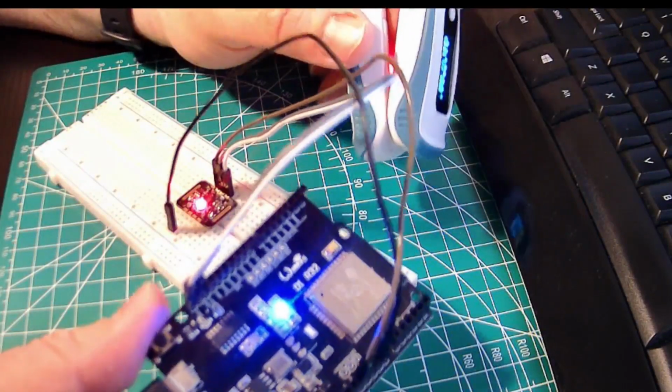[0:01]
Hello once again, friends. Last video, I showed you how to use the MAX30102 pulse oximeter module and breakout board along with an ESP32 microcontroller to measure blood oxygen saturation. What I didn't do was include a heart rate measurement. The reason for that is I couldn't find any code examples that actually worked. So I figured we should just look at the problem and do some of our own engineering.
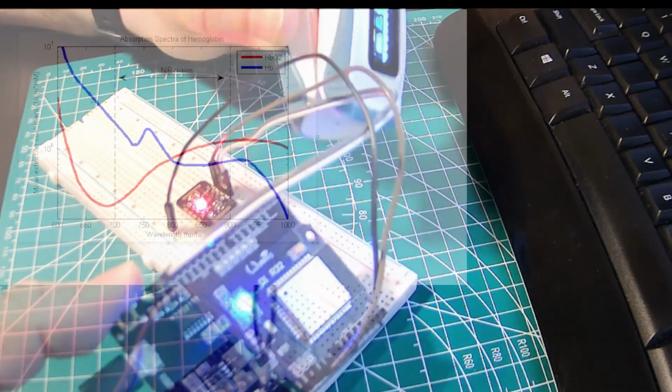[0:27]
First, you'll recall that a pulse oximeter exploits the fact that blood transmits or absorbs red and infrared light frequencies to varying degrees depending on how oxygenated the blood is. So we can shine red and infrared light at or through the surface of the skin and then measure how much of the light is transmitted or reflected using a light sensor, like a photodiode. But we can also exploit another observation of the reflected light to measure heart rate.
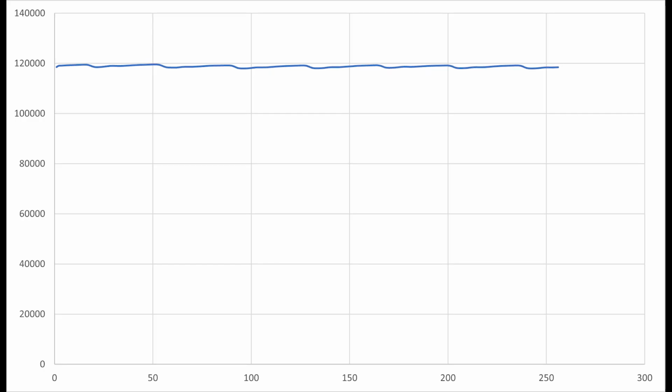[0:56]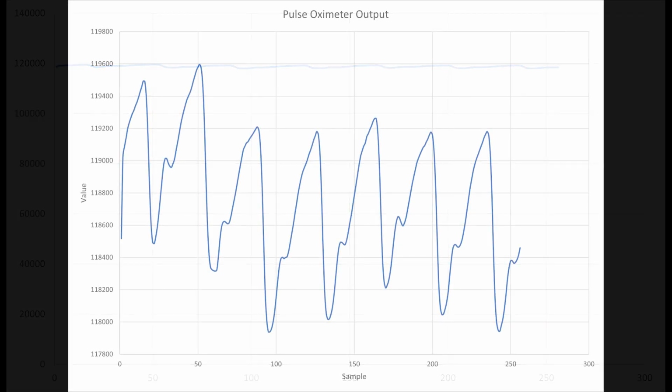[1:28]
This graph illustrates the samples taken for refracted red light from our setup using the MAX30102 breakout board. I recorded 256 samples while pressing my finger against the sensor. First, note that there is a rather large offset or DC signal that is sort of obfuscating what we really want to see. Let's look at it with the vertical axis not starting at zero and adjust the scale, and you'll see an obvious pulsation in the waveform.
This is my heartbeat, and the frequency of those pulses corresponds to my heart rate at the time of the measurement. So how do we use these samples to automatically measure heart rate? You might think of writing some code that scans the values and searches for waveform peaks and troughs and measures the time between all of them to compute an average heart rate. That's certainly possible, but probably a little trickier than you'd think.
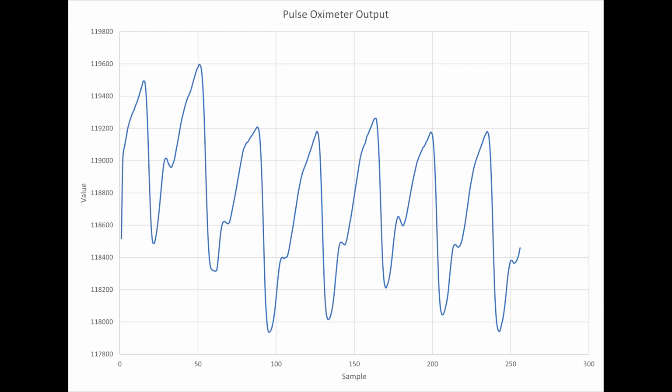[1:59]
Look at those small pulses that are sort of part of the larger pulses. They form local maxima and minima that might be difficult to distinguish from the main ones. And certainly you can't rely on using threshold values to determine pulse peaks and minimums, as you can see how the levels vary quite a bit, even in this small window sample.
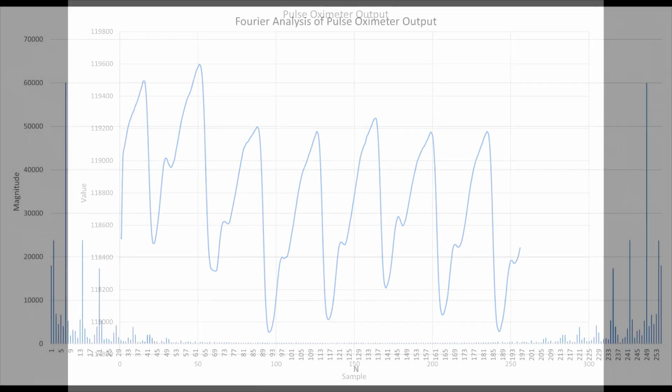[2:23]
If you've ever studied signals and systems, you might recognize this as something perfectly suited to Fourier analysis. In a nutshell, we can transform a time domain signal into the frequency domain. If we apply a Fourier transform to this waveform, we get a result that shows us the spectral content of the signal.
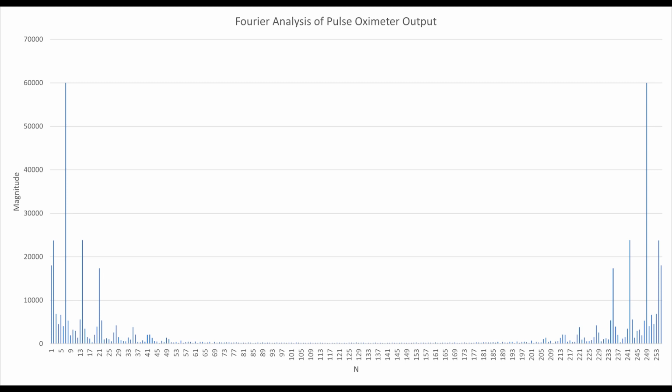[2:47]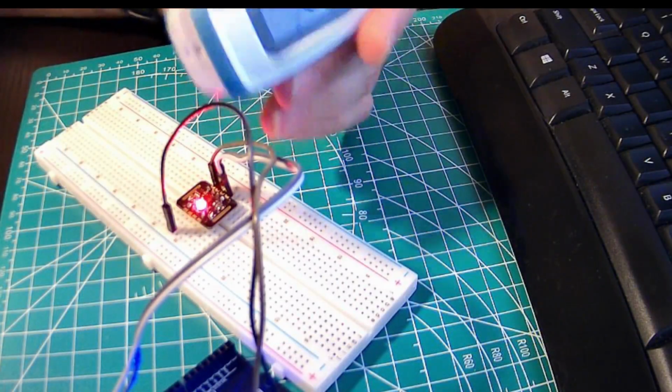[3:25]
Now, in this plot, I've removed the DC or zero frequency component because it's not relevant to a heart rate for a living person. I already determined that the sampling rate of the sensor we're using is 50 samples per second. For a 256-point discrete Fourier analysis, it means each bin corresponds to a multiple of about 0.2 hertz or 0.2 beats per second. We find the dominant frequency at an index of 7, which corresponds to a frequency of 1.37 hertz, which we multiply by 60 to get beats per minute. It turns out to be a heart rate of 82 beats per minute, and I can confirm that was in fact the correct heart rate at the time of measurement. So using Fourier analysis really seems to be a no-brainer here in my opinion.
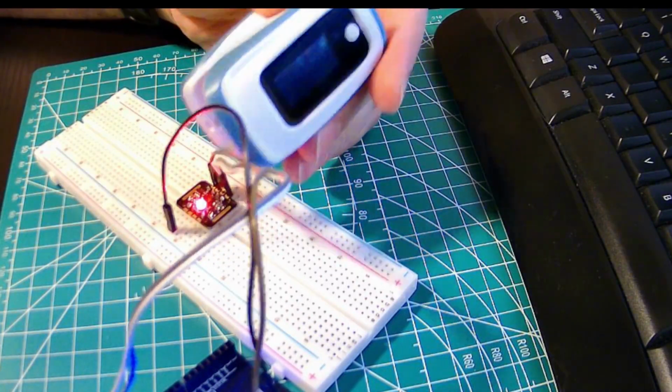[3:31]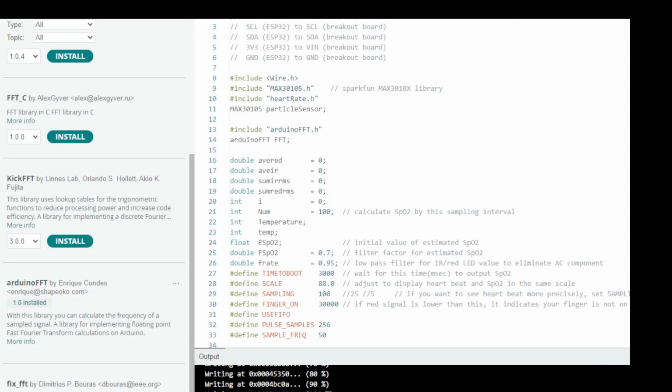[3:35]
Let's see about applying that on the ESP32. Going to the Arduino IDE, what we'll do is make sure we have installed the Arduino FFT library that I'm highlighting here. As with many Arduino libraries, the documentation isn't exactly exhaustive, but there are a number of examples available if you follow the link to the associated GitHub library, and you can find some information if you do a search. With this library, we can perform a fast Fourier transform, which is an optimized discrete Fourier transform that we must use a power of two samples.
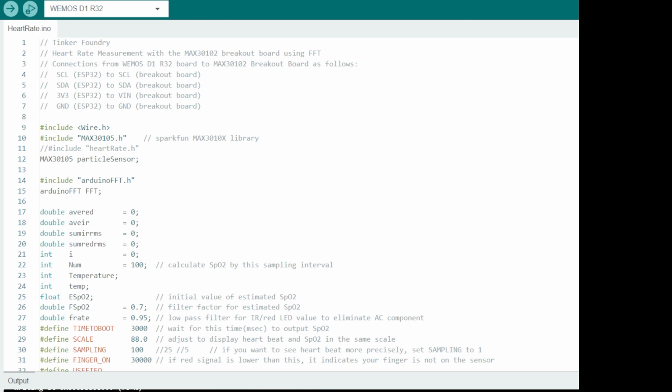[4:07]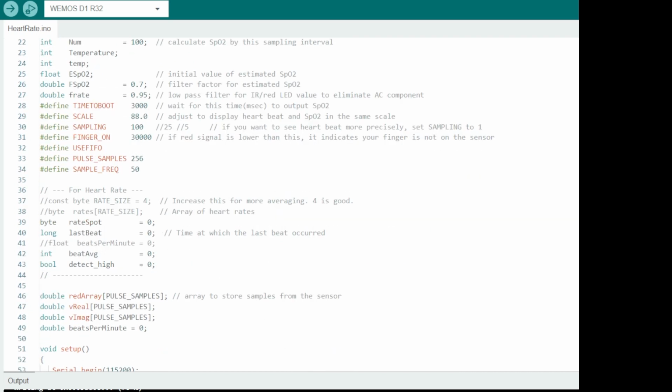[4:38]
I'll quickly run through the code just to highlight a few things before we run it. But remember, I will share the code listing used here through a link in the video description. You will also want to reference my previous video for more background about the MAX30102 pulse oximeter sensor. Okay, so we include libraries for the MAX30102 itself and for the FFT. We have an array to store the sensor samples. Here I call it red array, and it has pulse samples number of entries, which is defined as 256, of course.
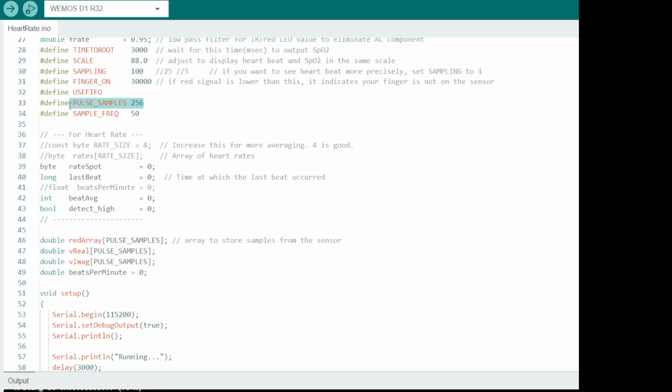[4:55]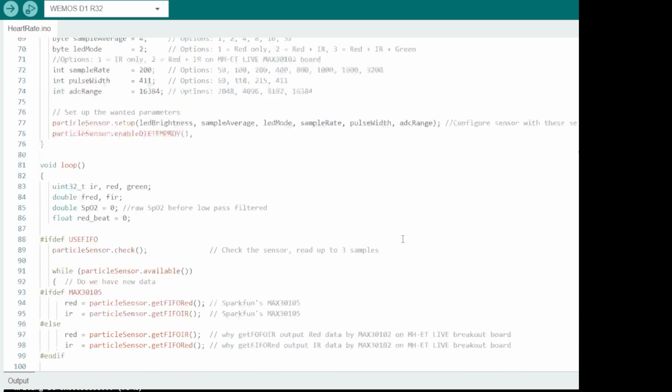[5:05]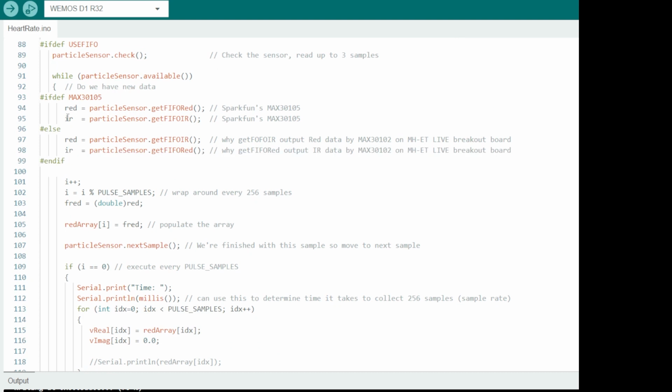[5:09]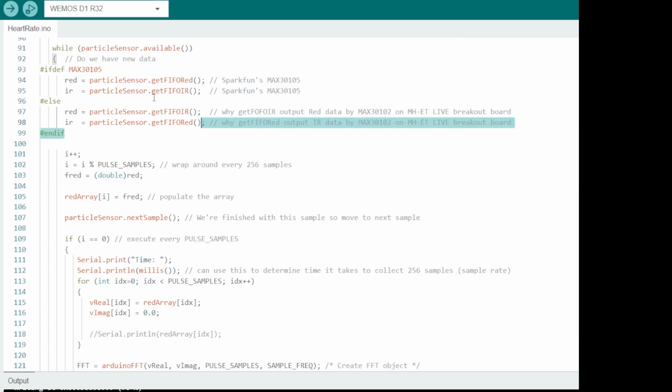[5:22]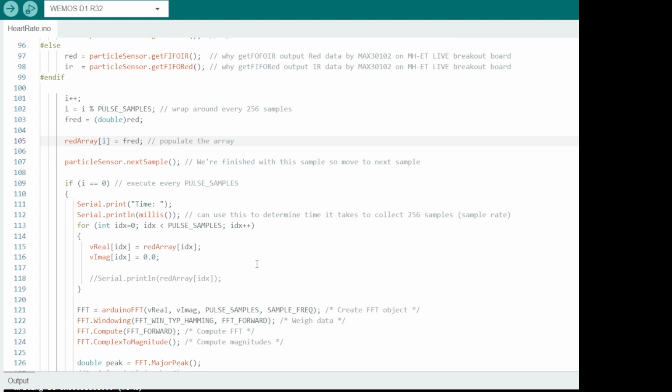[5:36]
Also note, I define our sample frequency as 50 up here. So we'll jump to the main loop where we have a while loop, which waits on the next available sensor reading from the MAX30102. Once a reading is ready, we collect the red and infrared samples. Now, we only end up using the red value anyway, but this, along with some other code, is a leftover from the oxygen saturation measurement code from the last video. So now we take the samples one by one and populate the 256 entry array.
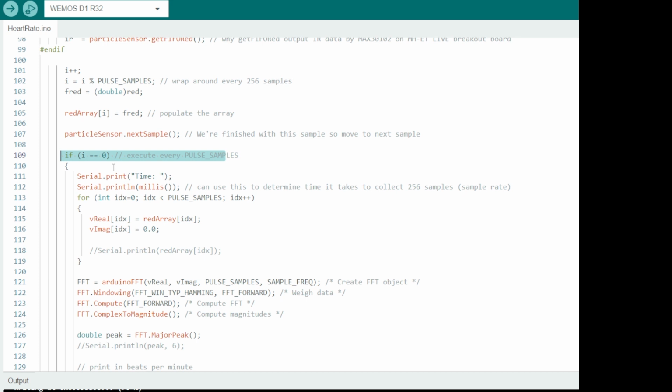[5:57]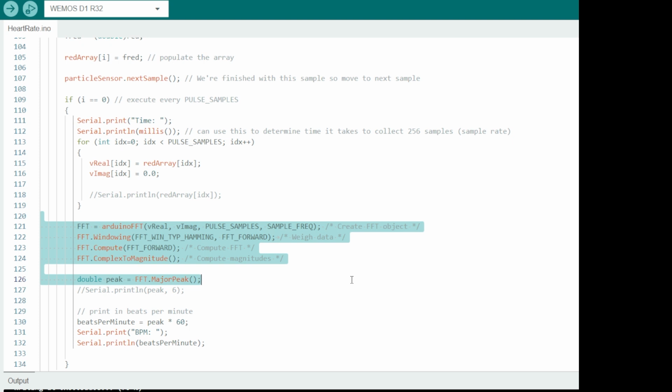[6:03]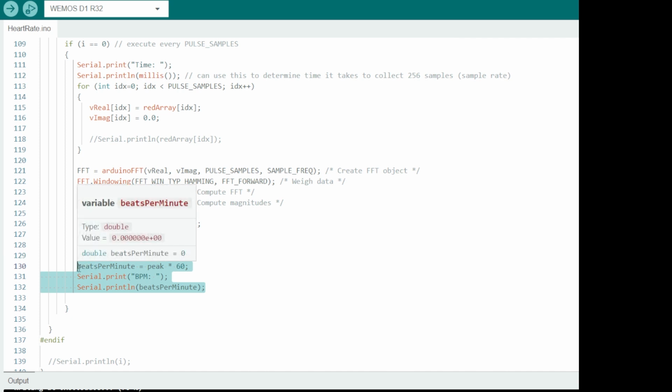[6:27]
Once we've collected a multiple of 256 samples, we have an if statement in which we pass along the samples to the FFT function. The code snippet is adapted from a code example. And in the end, we use the library function to find the major peak of the transformed samples. That is, we find the dominant frequency. And finally, we convert the frequency to a beats per minute value and print the result to serial output.
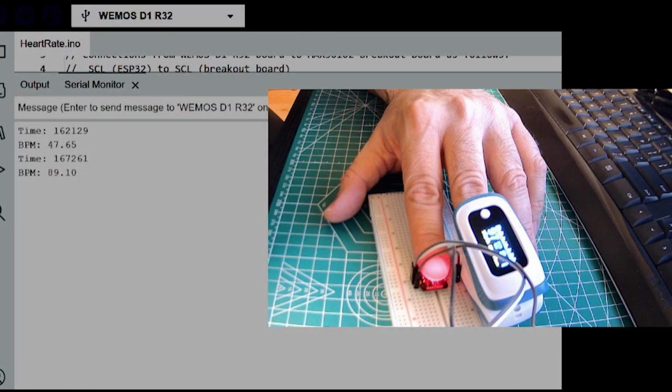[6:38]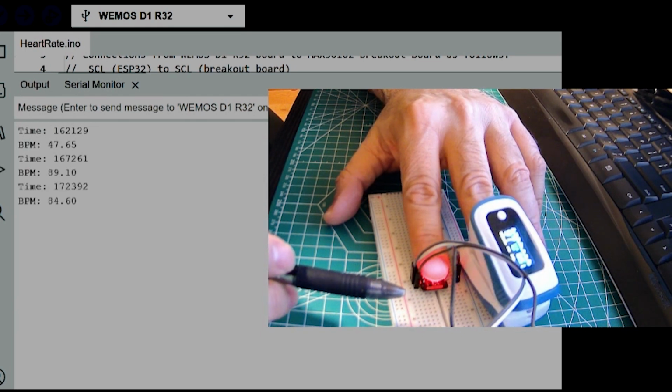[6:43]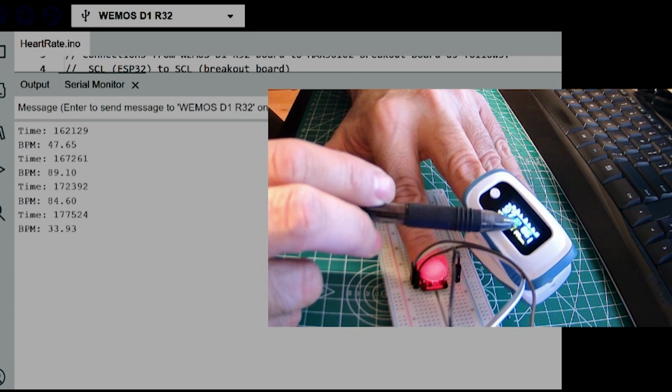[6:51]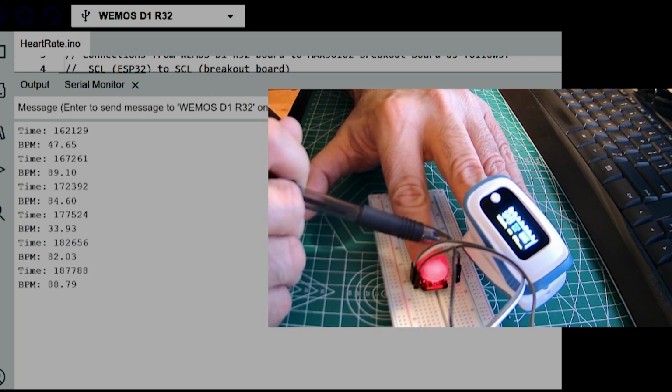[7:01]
Let's have a look at the ESP32, MAX30102, and the compiled and uploaded code in action. I've got the code running on the ESP32, which is connected to the MAX30102 breakout board using only four wires, which I describe in the code listing. I've got the output from the board being sent to the serial monitor in Arduino IDE. What I'm doing here is holding my index finger on the sensor, kind of feeling like ET there, and I've got a reference pulse oximeter that displays oxygen saturation and heart rate on another finger to use for comparison.
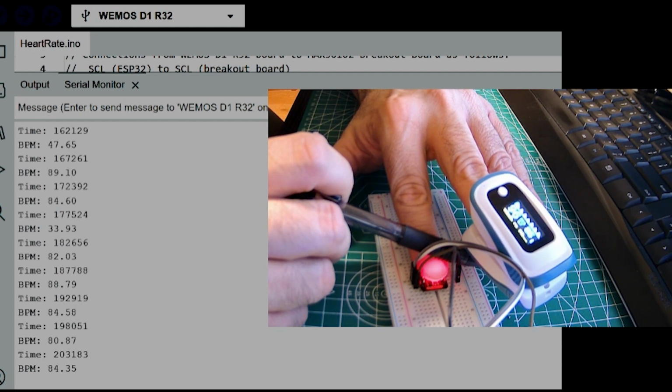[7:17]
Once my finger position settles in and things stabilize, the heart rate measurement from the ESP32, as shown in the serial monitor text, starts looking good and matches quite closely the reference device. I've tested this for a while and it does seem to work quite reliably.